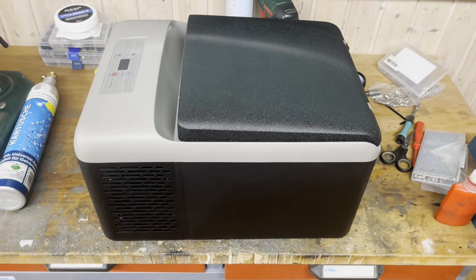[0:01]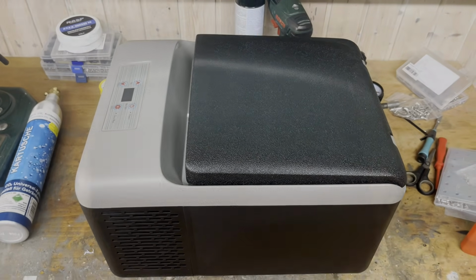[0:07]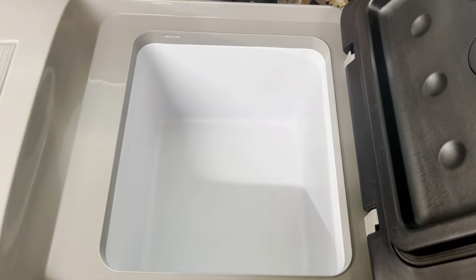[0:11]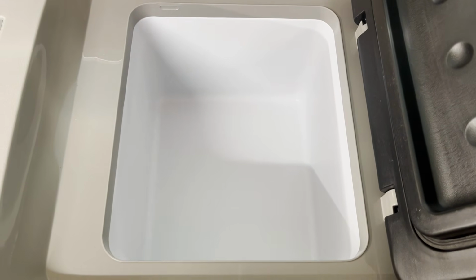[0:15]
Today we will convert this portable freezer into a water chiller for the chemistry lab. These portable freezers all run on 12 volts DC, as they are designed for the auxiliary power outlet in cars, motorhomes and boats. They use a compressor for cooling. My version has a volume of 9 liters.
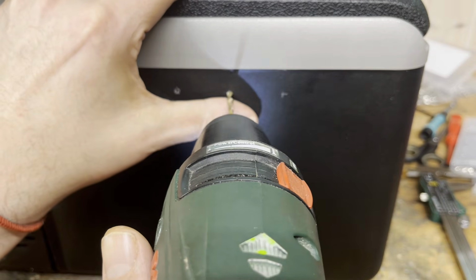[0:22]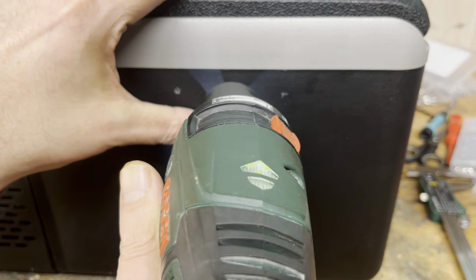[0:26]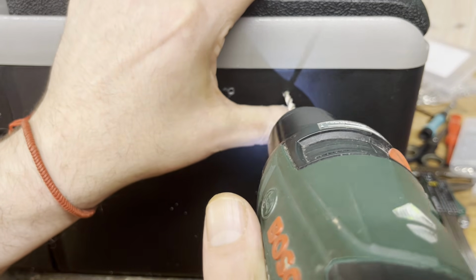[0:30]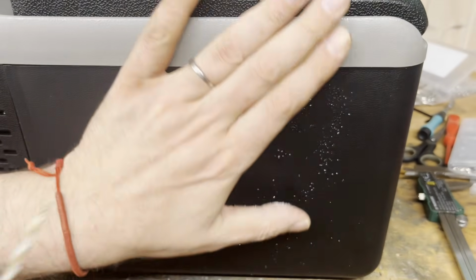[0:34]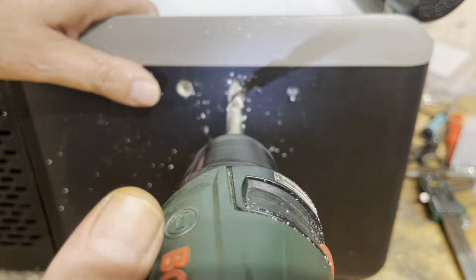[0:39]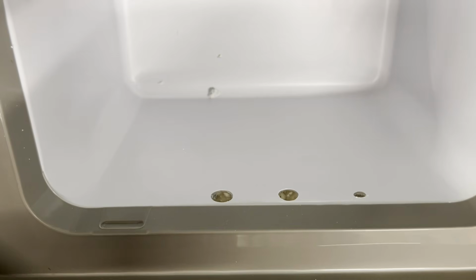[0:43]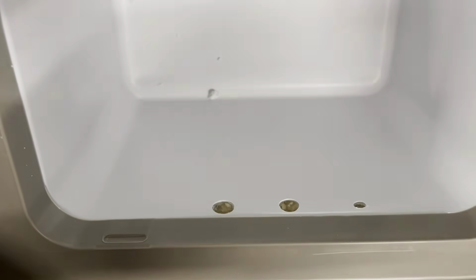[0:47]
First, drill 3 holes at the positions and distances shown. Be very careful not to hit any internal pipes or cables. I therefore pre-drilled the holes with a 5 mm drill bit. The 2 holes on the left are then enlarged to 10 mm, therefore the water inlet and outlet. The 5 mm hole on the right is for feeding through the cable for the submersible pump.
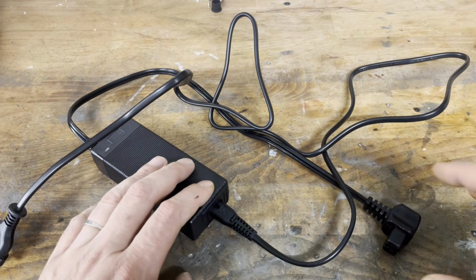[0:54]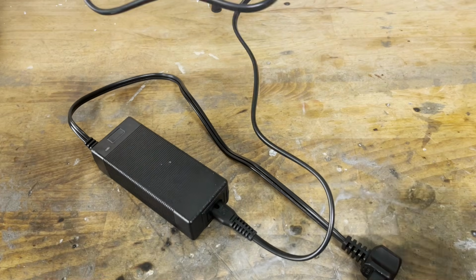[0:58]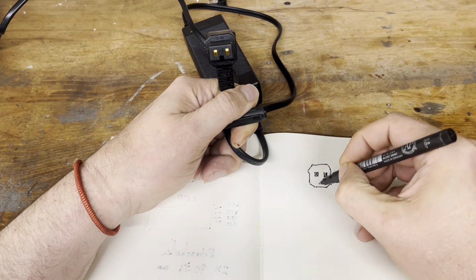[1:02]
After drilling, a brief functional test is performed. My version of the freezer also came with a 230 volts power supply. This makes it easy to determine the polarity of the 12 volts plug that connects to the freezer.
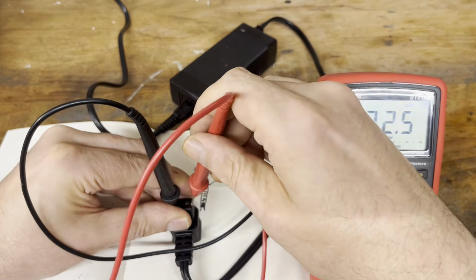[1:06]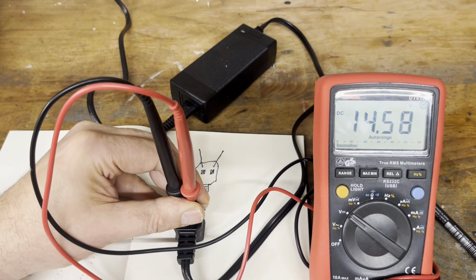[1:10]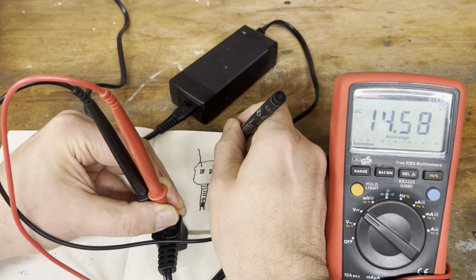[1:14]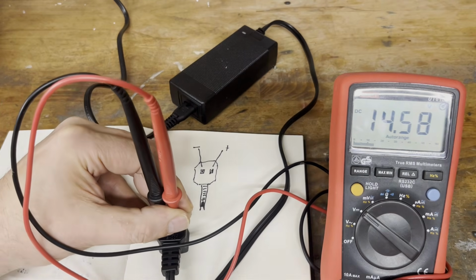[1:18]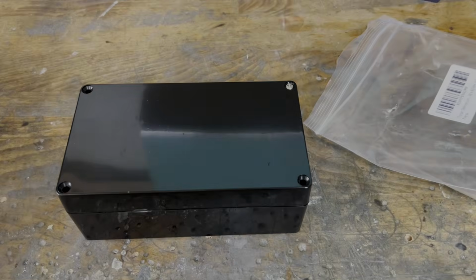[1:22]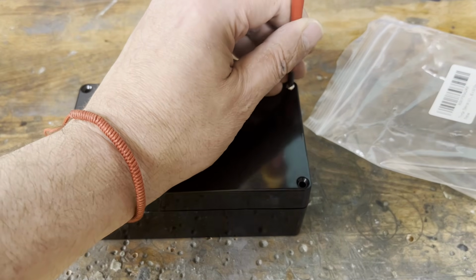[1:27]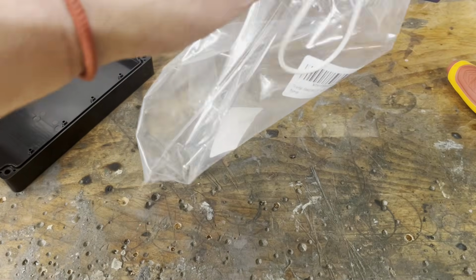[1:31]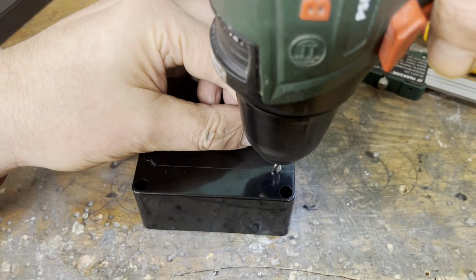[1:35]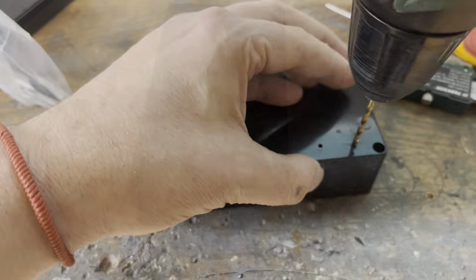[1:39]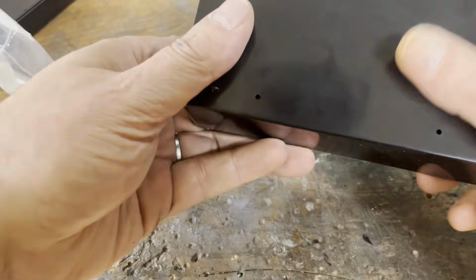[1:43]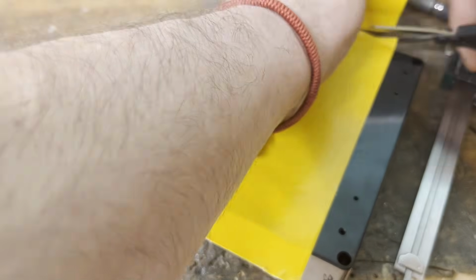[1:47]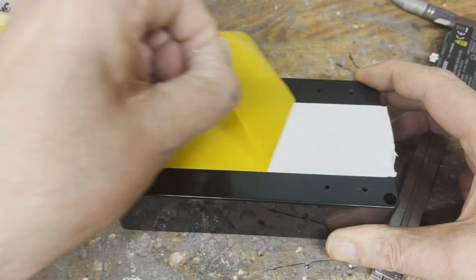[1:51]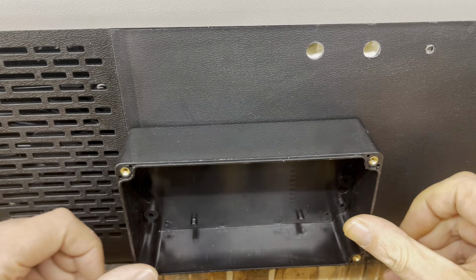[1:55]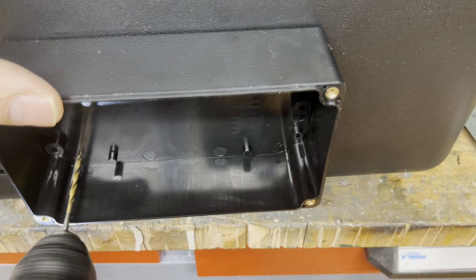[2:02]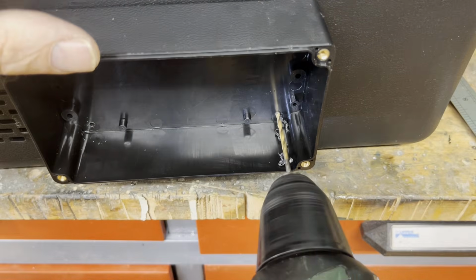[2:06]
Next, we need a waterproof plastic box measuring 158 by 90 by 60 millimeters. Four 3 mm mounting holes are drilled into the bottom of the box. Then, double-sided adhesive tape is placed on the bottom of the box. Once the box is in position, the mounting holes are transferred. Make sure that you only drill into the outer shell of the freezer.
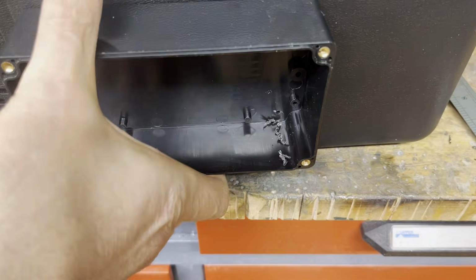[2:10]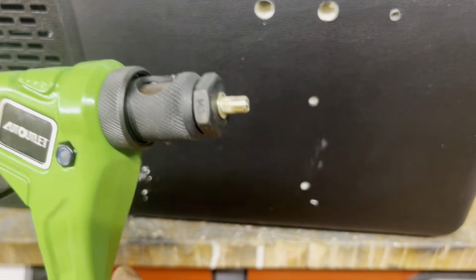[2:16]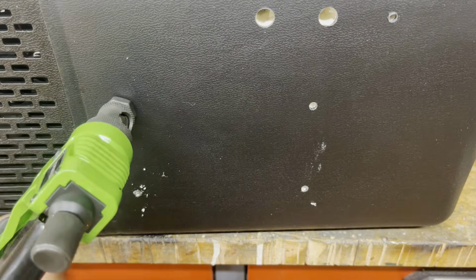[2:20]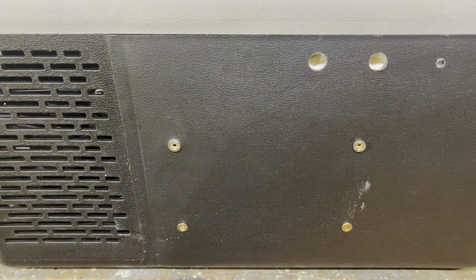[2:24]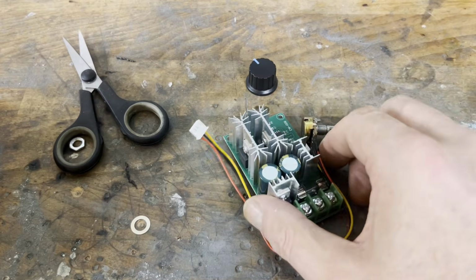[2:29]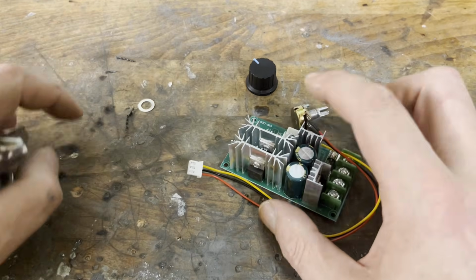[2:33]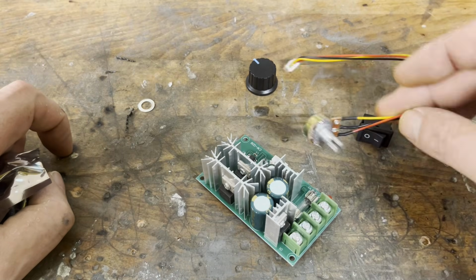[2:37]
Now a rivet nut insertion tool and M3 rivet nuts are required. Furthermore, we need a 12 volts DC motor speed controller, an on-off switch and a 5.5 by 2.1 mm DC power jack.
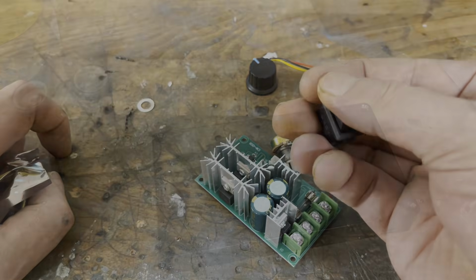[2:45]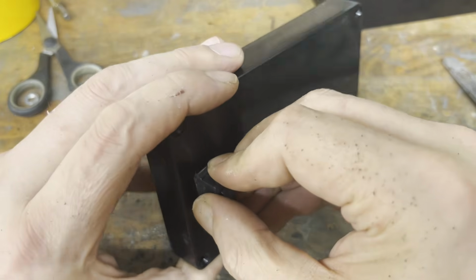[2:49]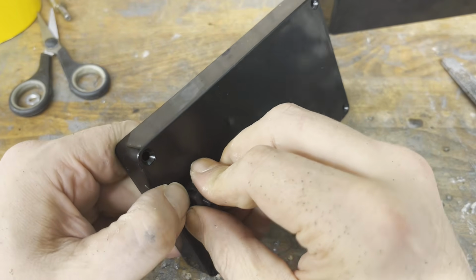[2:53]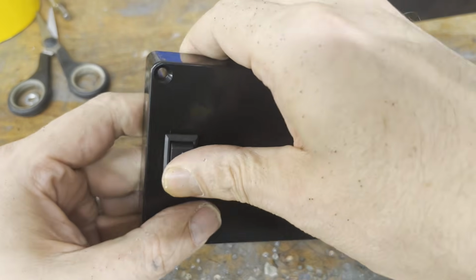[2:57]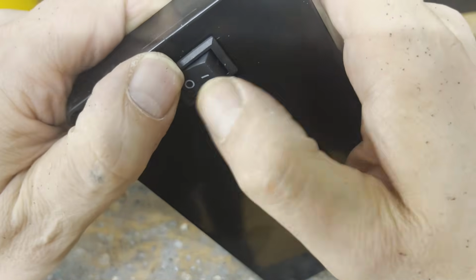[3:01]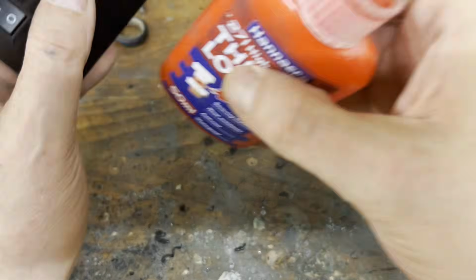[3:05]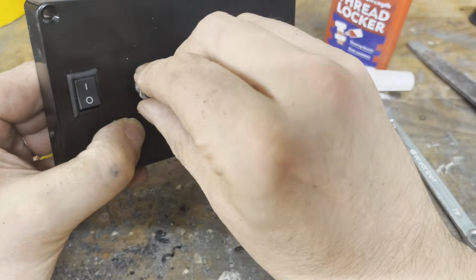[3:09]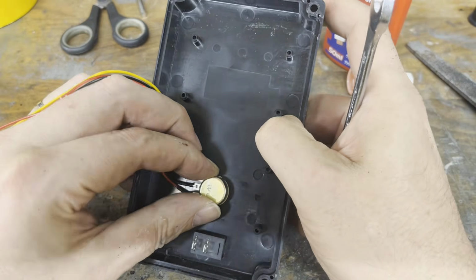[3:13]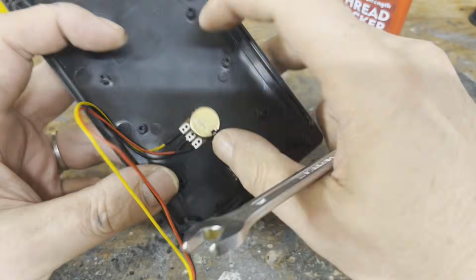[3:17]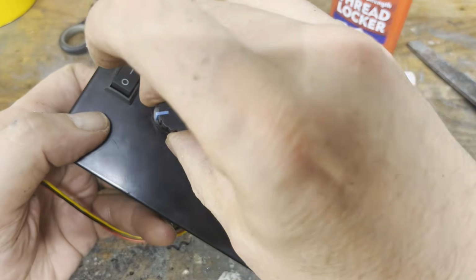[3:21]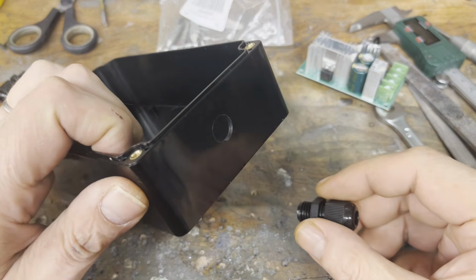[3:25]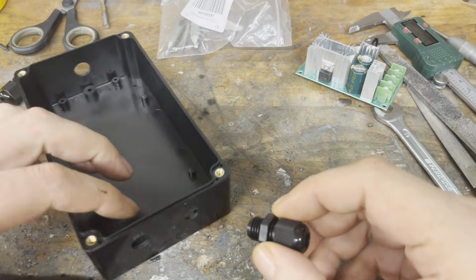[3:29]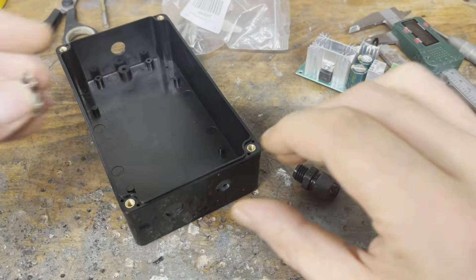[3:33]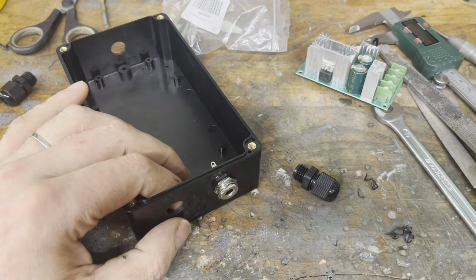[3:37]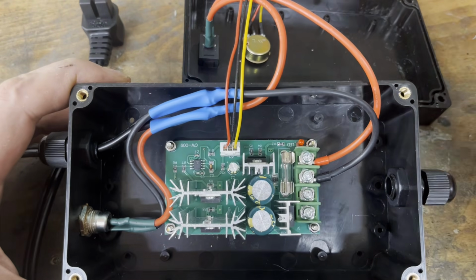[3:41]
First, a cutout is made in the lid for the on-off switch and clipped in place. This is followed by drilling a hole in the lid for the potentiometer and mounting it. Off camera, I have already drilled 3 holes for the waterproof cable grommets and the jack. Here you can see how I assembled and wired everything.
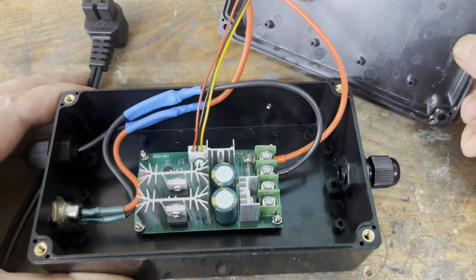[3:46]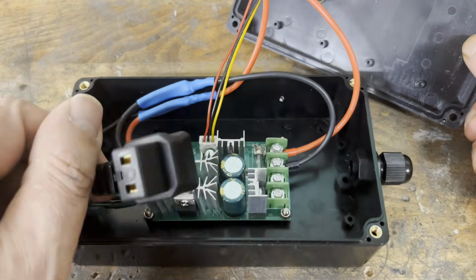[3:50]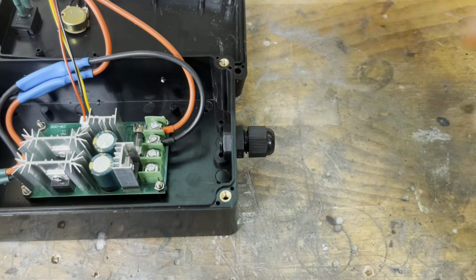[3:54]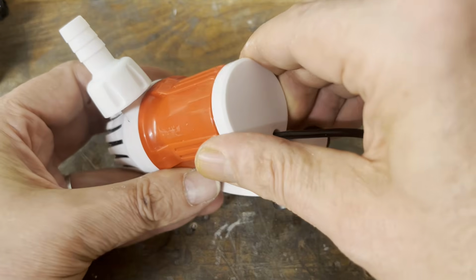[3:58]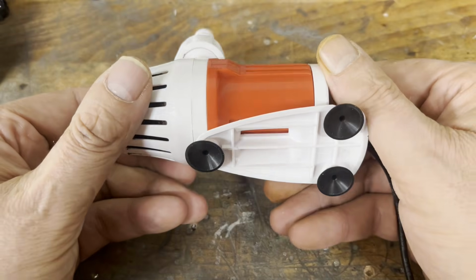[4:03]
The freezer is only supplied with power and is independent of the on-off switch, as it has its own control panel, allowing you to cool the water without running the pump. The submersible pump is also powered by 12 volts DC. You can buy it on Amazon, just like the motor speed controller.
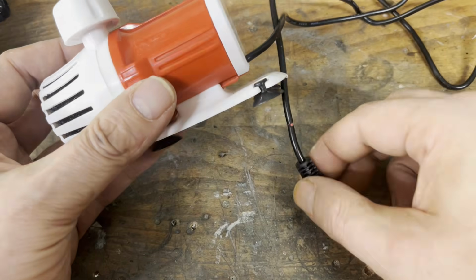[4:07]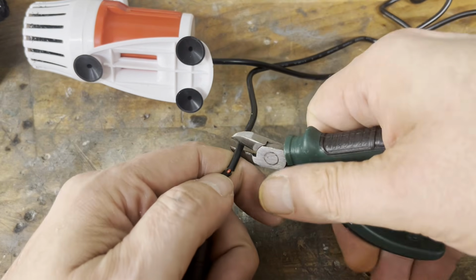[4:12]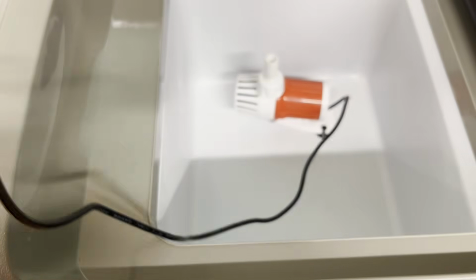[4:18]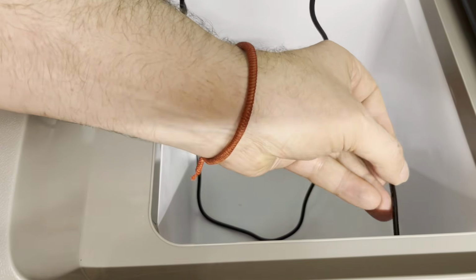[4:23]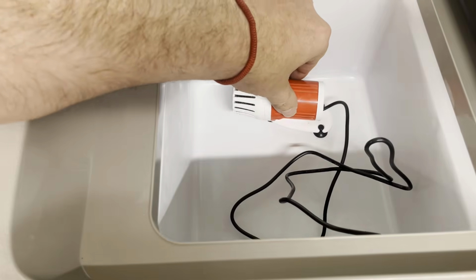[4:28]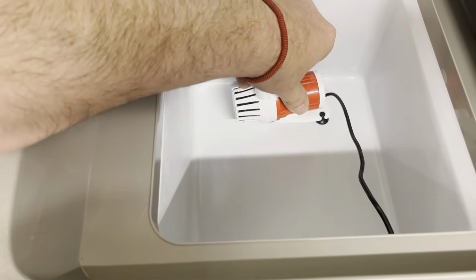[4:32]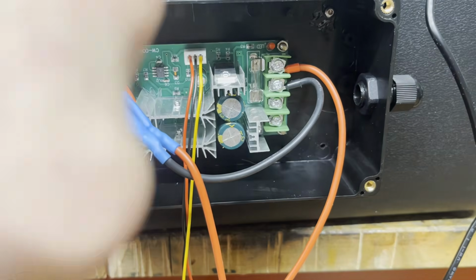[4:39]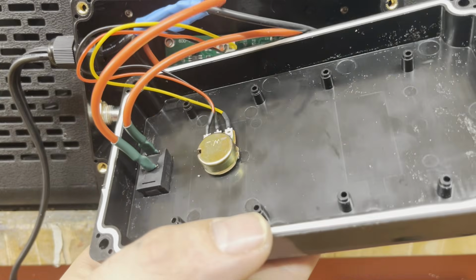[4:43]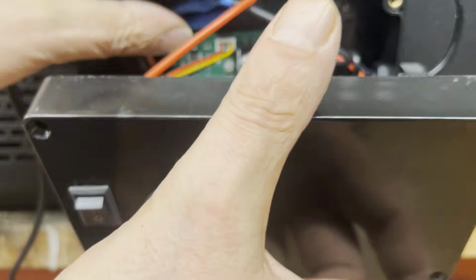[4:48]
Now the box is mounted on the freezer using M3 screws. Once the supplied sealing cord has been inserted into the lid and the pump has been connected to the motor controller, the lid can be screwed on.
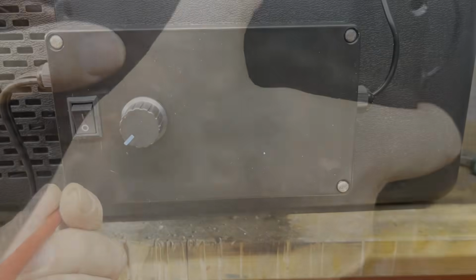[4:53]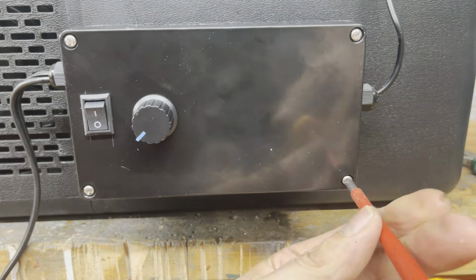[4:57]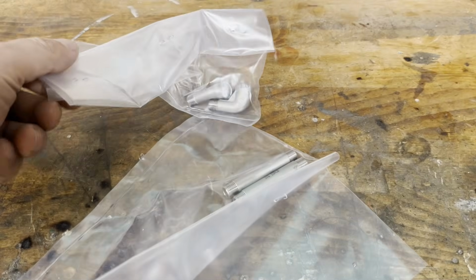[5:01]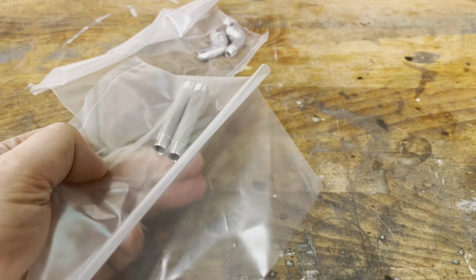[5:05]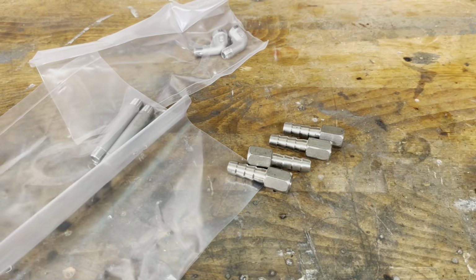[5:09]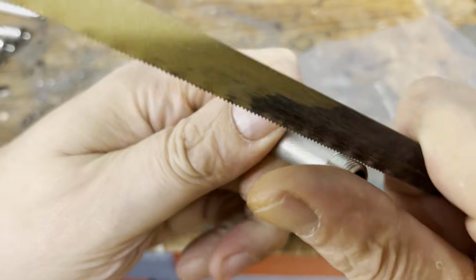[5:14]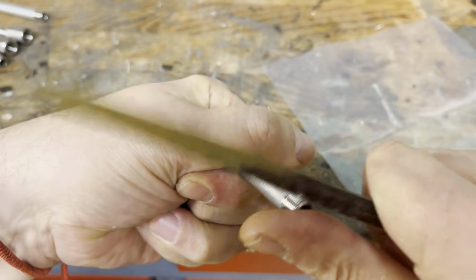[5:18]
For the water inlet and outlet, we need the following 1/4-inch stainless steel fittings. Before applying the Teflon tape, the threads are roughened with an old saw blade. This ensures that the Teflon tape adheres to the thread.
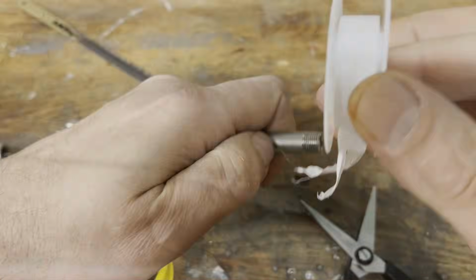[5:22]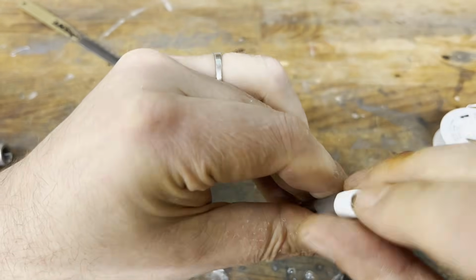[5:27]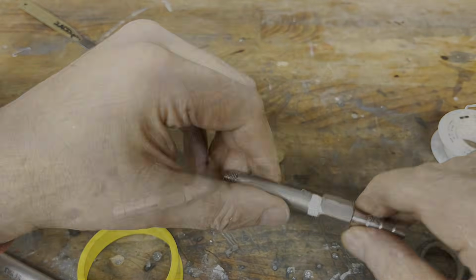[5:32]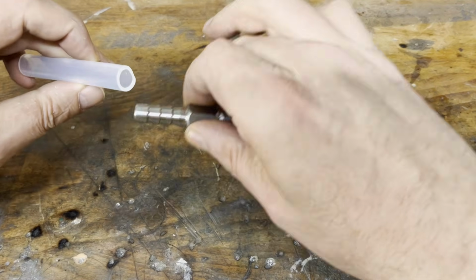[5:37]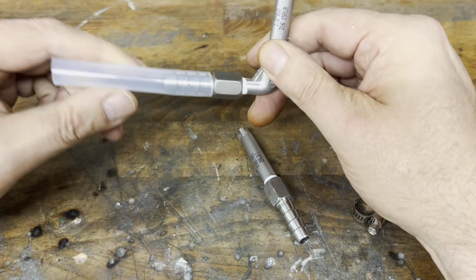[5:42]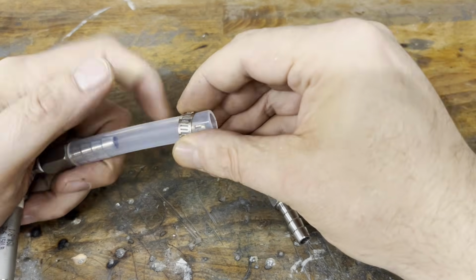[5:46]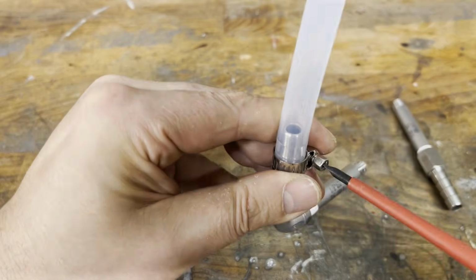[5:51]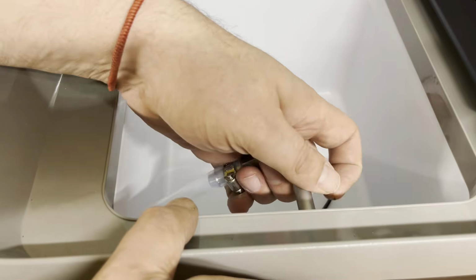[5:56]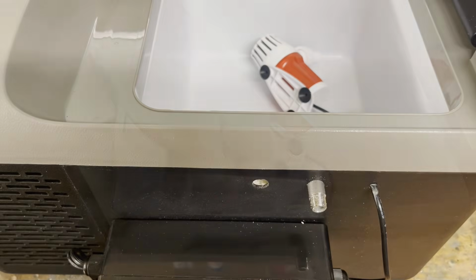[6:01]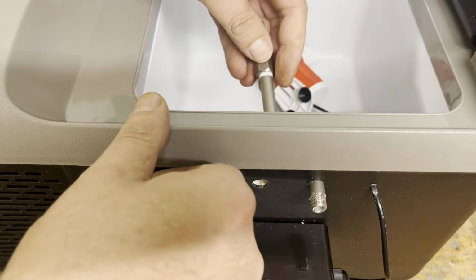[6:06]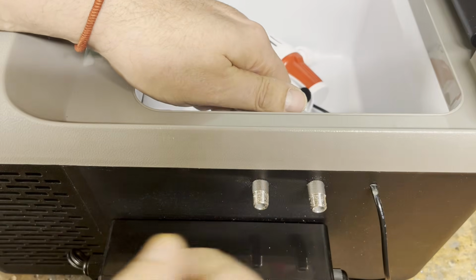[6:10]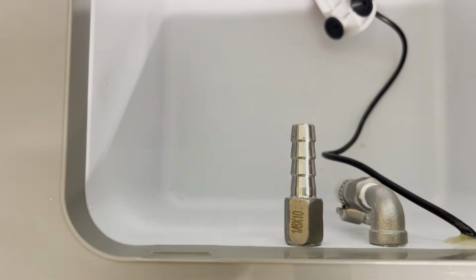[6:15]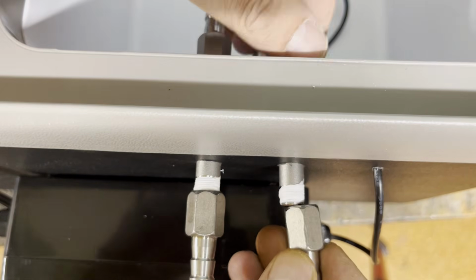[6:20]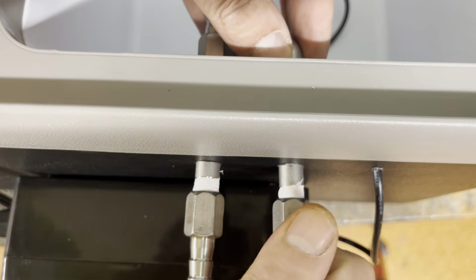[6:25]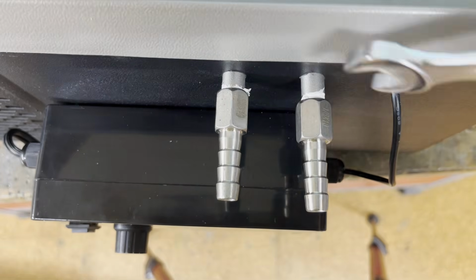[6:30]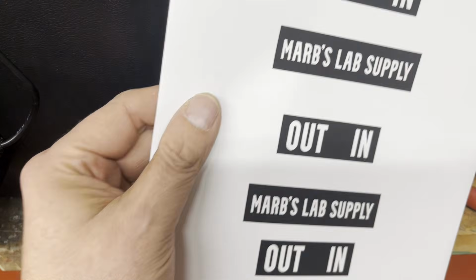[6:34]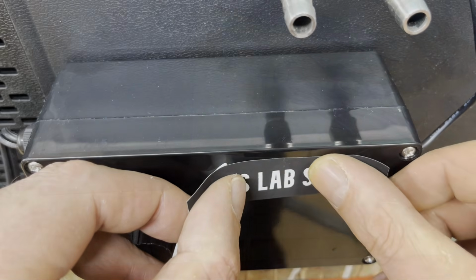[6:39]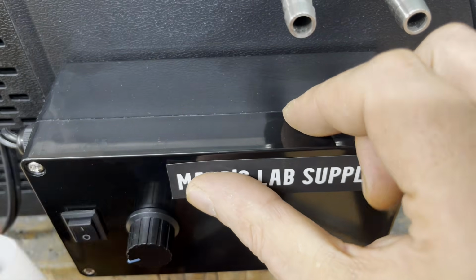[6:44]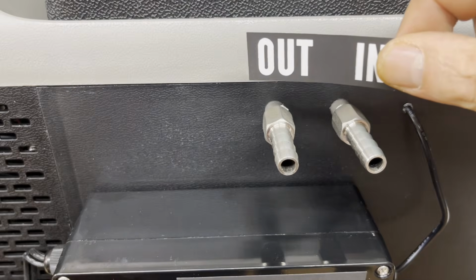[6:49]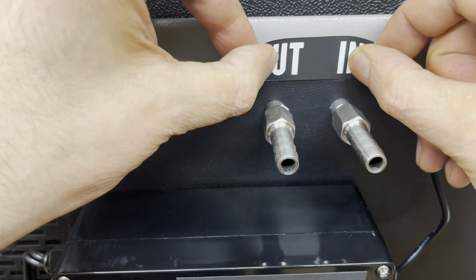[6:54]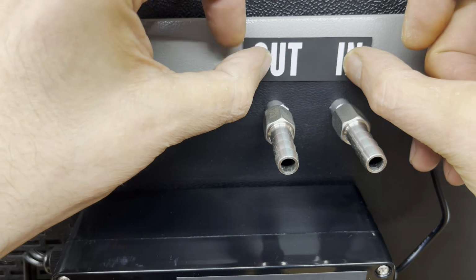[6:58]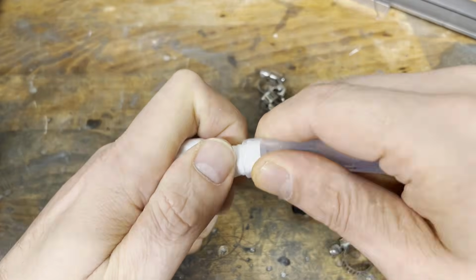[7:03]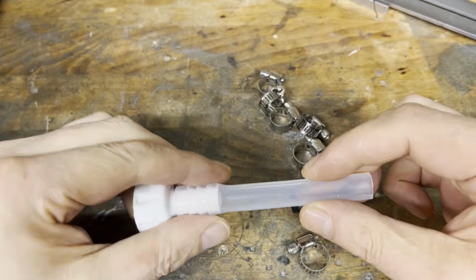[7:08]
I like to use self-adhesive vinyl film for labels. You can simply print on it with an inkjet or laser printer. We are almost finished with the build. Now we just need to connect everything with silicone tubing.
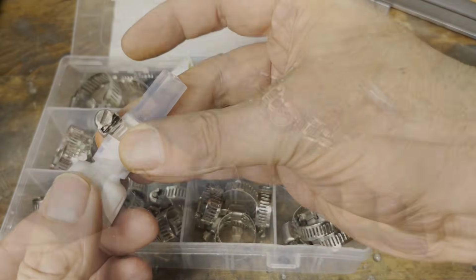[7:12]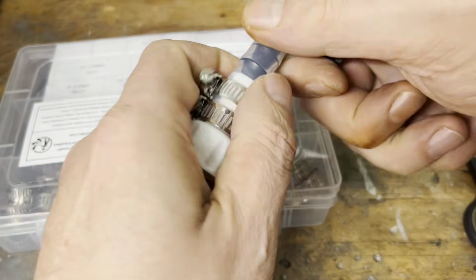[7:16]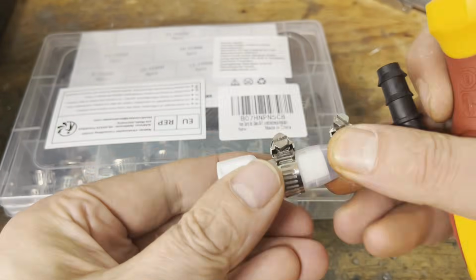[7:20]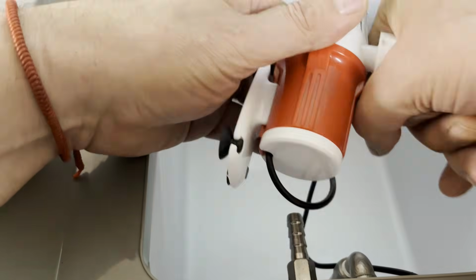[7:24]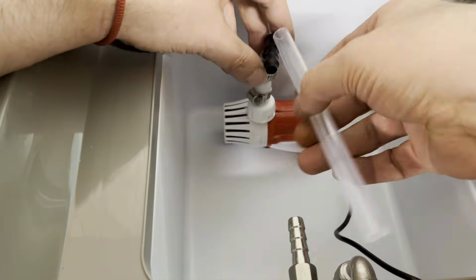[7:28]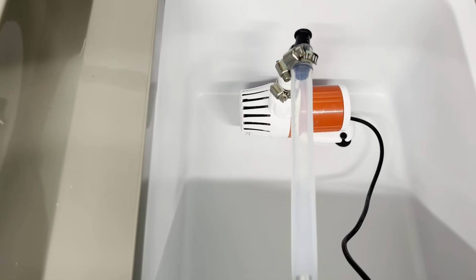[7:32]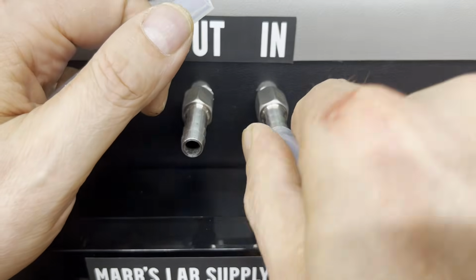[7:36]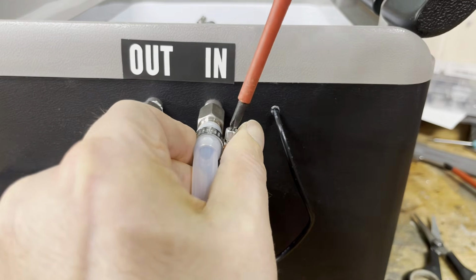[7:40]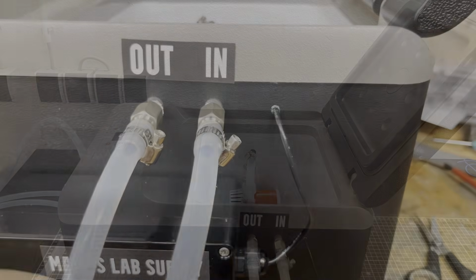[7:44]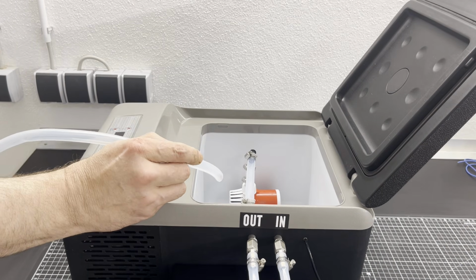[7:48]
I completely forgot to mention that the feed-through stainless steel tube should be sealed with 2-component epoxy resin. Time to put the water chiller through its first test.
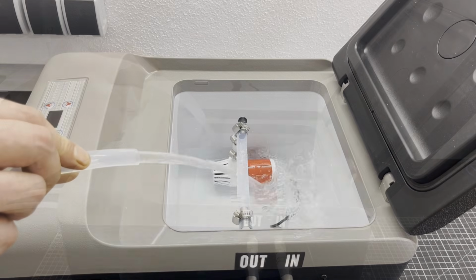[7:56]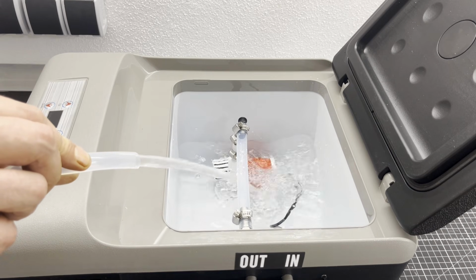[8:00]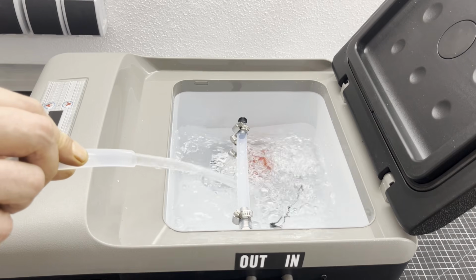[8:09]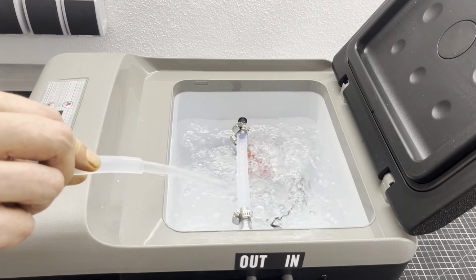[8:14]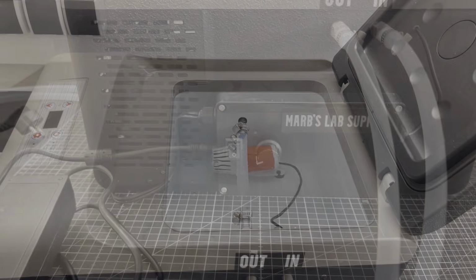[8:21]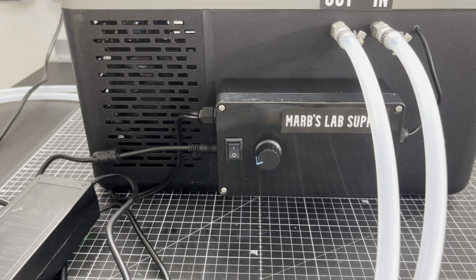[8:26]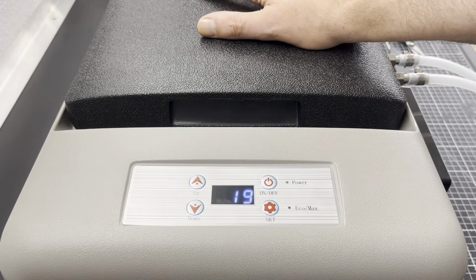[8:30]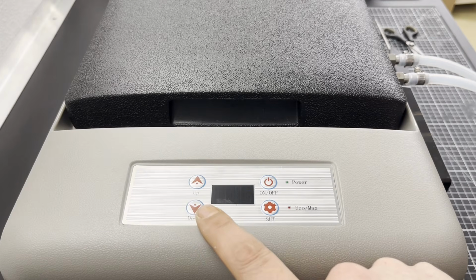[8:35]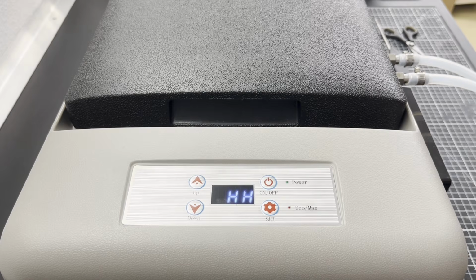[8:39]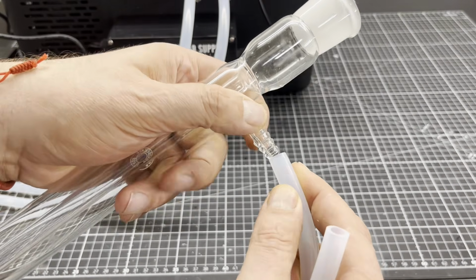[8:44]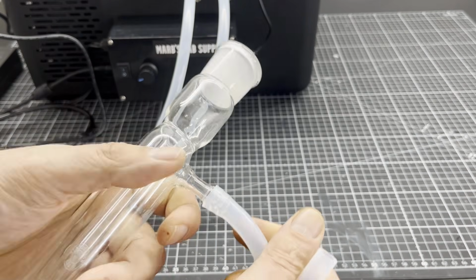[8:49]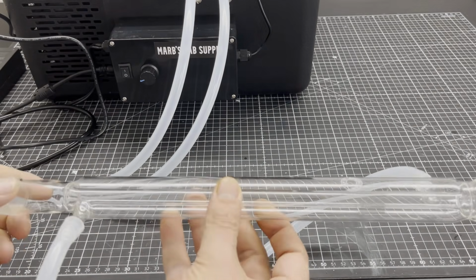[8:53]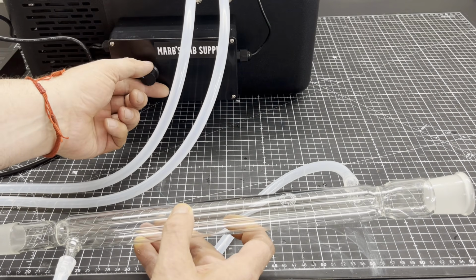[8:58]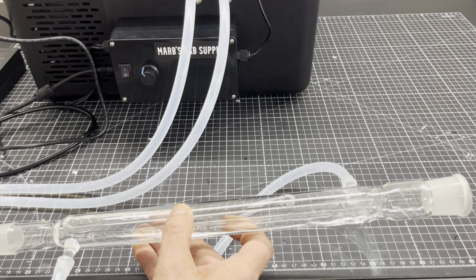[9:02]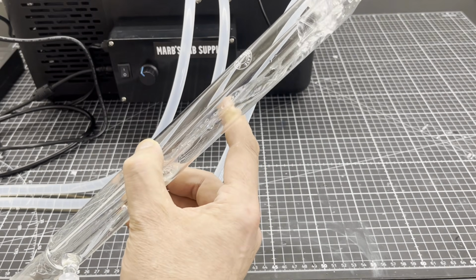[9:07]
The water chiller is primarily intended for small laboratories that do not have their own water connections. It is anyhow not sustainable to use running water or even drinking water for cooling condensers. What I find very practical is the adjustable volume flow, which allows you to precisely adjust the cooling performance in addition to the temperature.
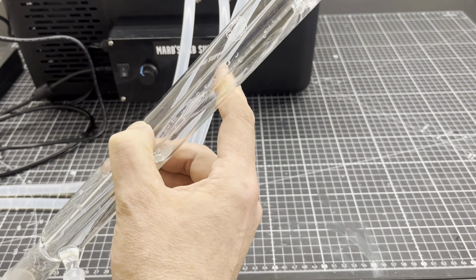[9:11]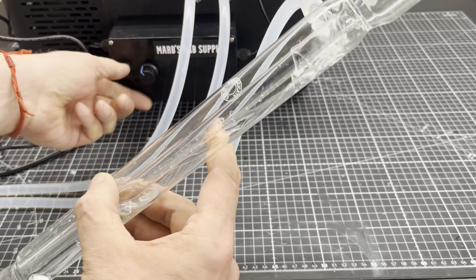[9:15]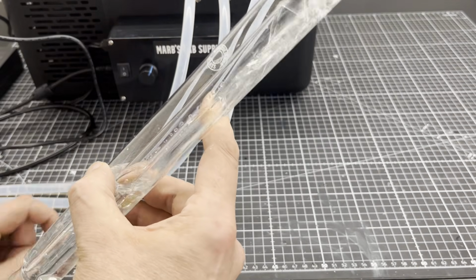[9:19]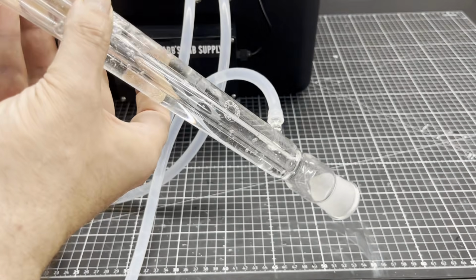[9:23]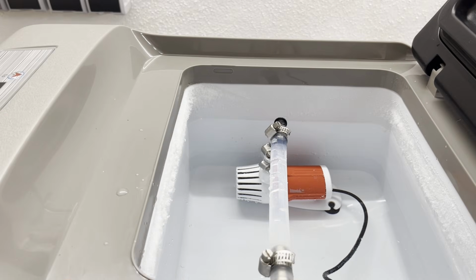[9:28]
You should not expect miracles from the device. It cools very well for smaller distillation jobs, and you can also pack ice or cold packs into the water chiller. If you need more cooling water, simply use a larger portable freezer.